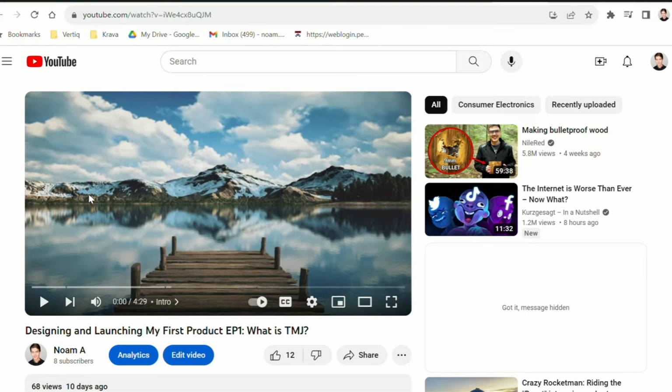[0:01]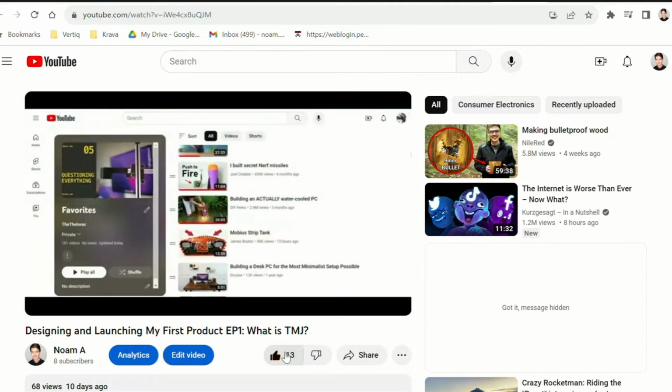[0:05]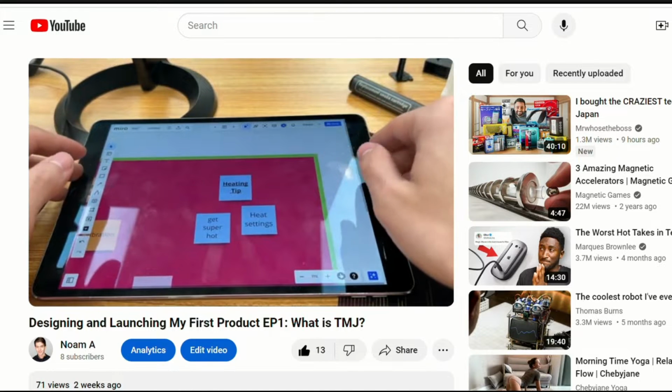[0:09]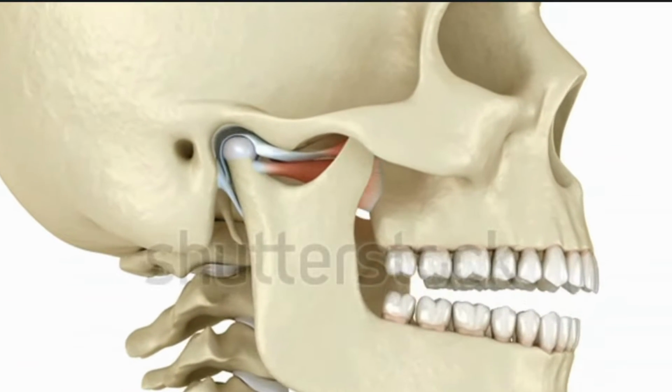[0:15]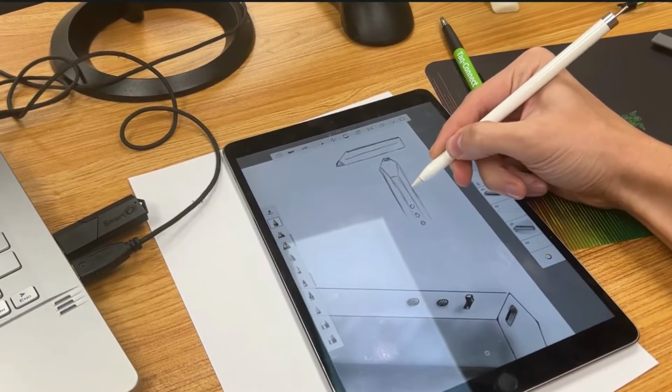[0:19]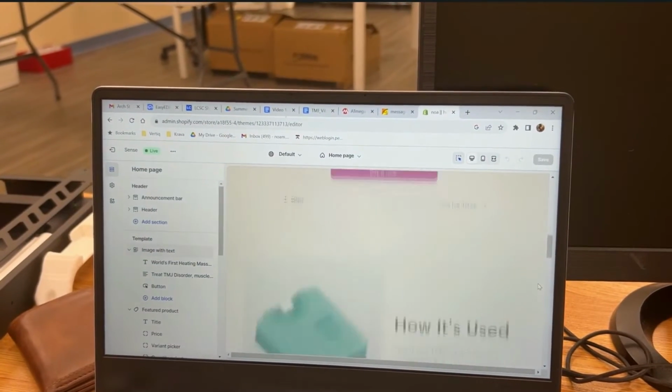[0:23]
Hey everyone, if you haven't seen episode 1 of the series, I highly recommend it, since we go over why we're doing all this in the first place and lay out our design guidelines. But if you've forgotten, this series is about designing and launching my first product that helps treat TMJ disorder. And I'll take you on my journey from ideas to designs, to prototypes, to production, to branding, and to sales.
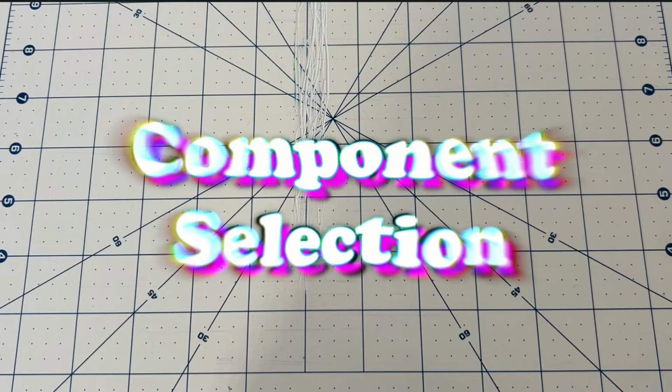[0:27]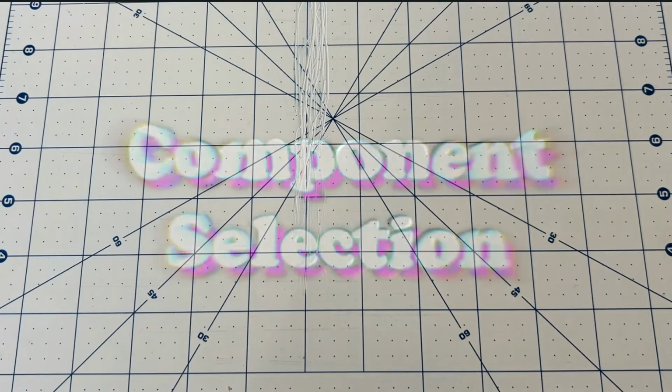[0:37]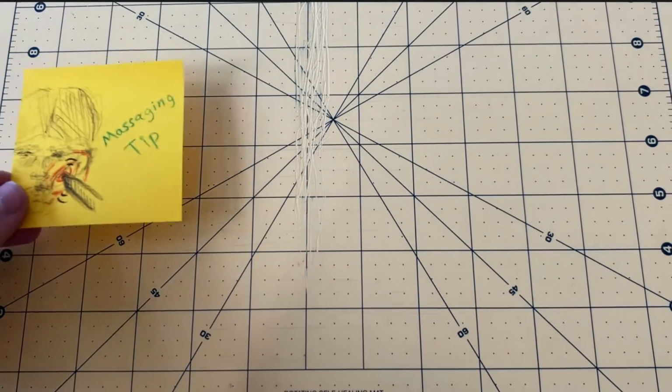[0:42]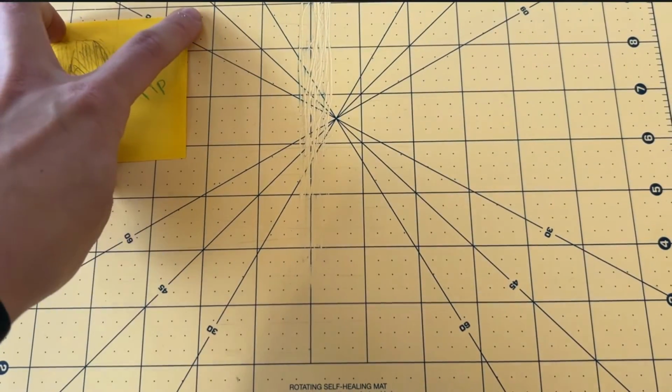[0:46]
For this episode, I want to jump right into component selection. I find this to be the best thing to start with because it'll help us with initial dimensioning and form factor design, as well as figuring out our total current draw, which is crucial for dialing in the electronics. So last episode, we discovered that the best at-home treatment for TMJ disorder is heat and massage. So might as well start with the massaging part.
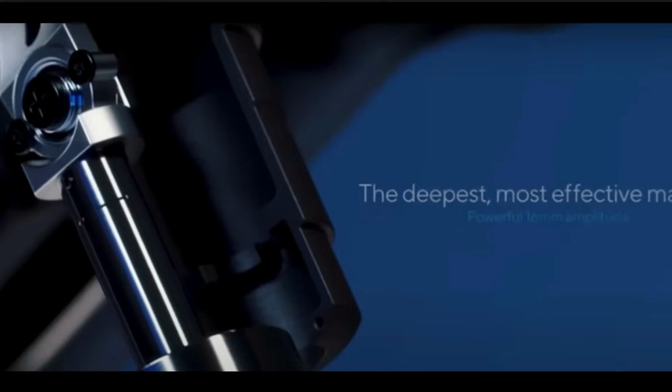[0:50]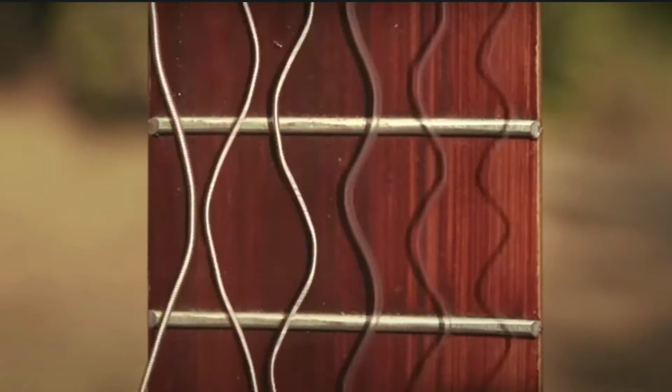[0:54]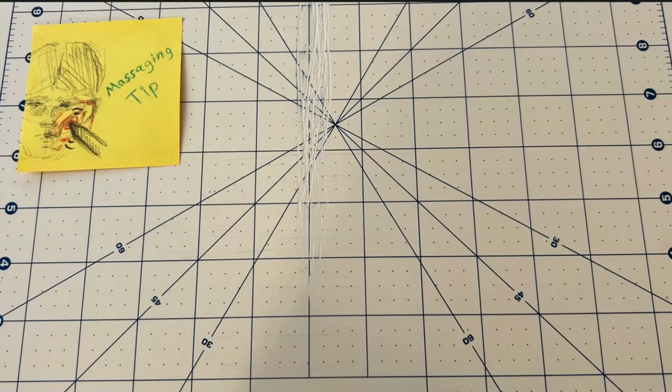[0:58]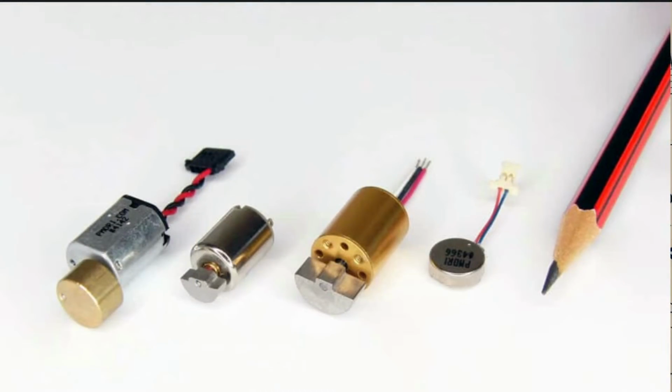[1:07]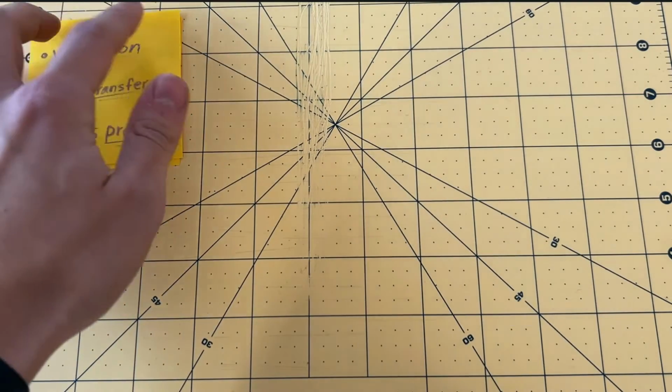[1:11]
A while back, I was considering creating a percussive action, like theraguns, or potentially play around with resonance and give the tip some throw. But as I've stated before, we're trying to make an MVP here. Sometimes it's hard to choose what features to drop, but in this case, I chose to go with a simple vibration motor. At the front of the device, we need a tip that will transfer heat to the jaw, as well as allow for some high-pressure massaging.
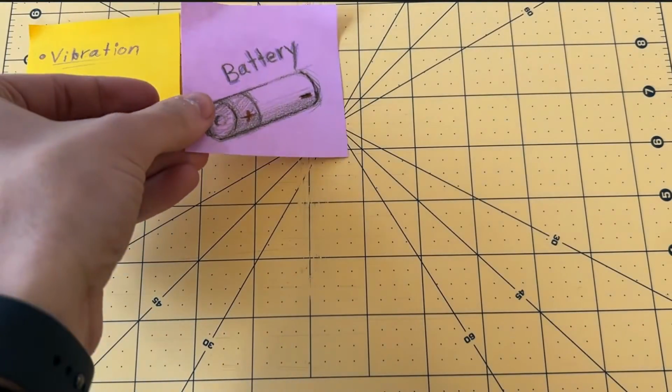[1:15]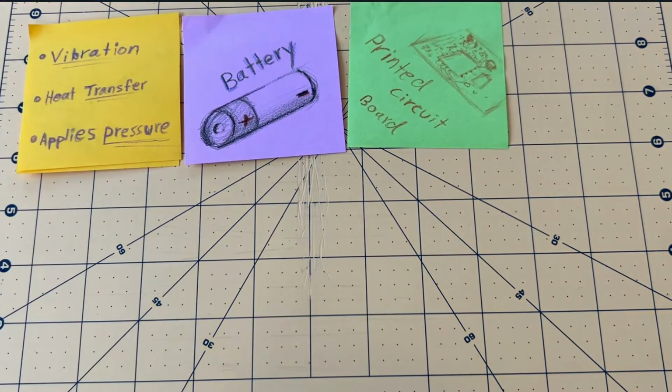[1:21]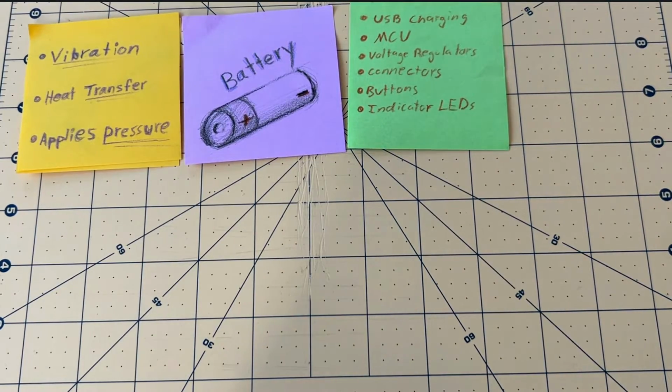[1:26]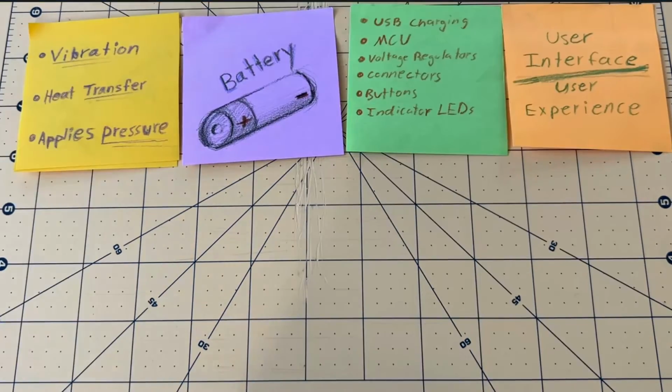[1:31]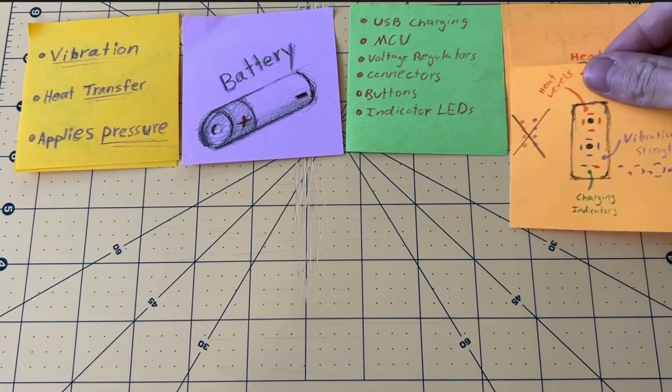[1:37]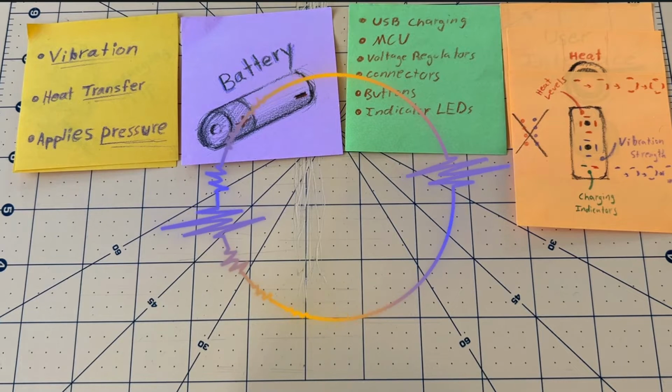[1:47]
We'll also, of course, need a battery, as well as a circuit board that contains all the necessary features, like USB-C charging, a microcontroller, voltage regulators, connectors, buttons, and indicator LEDs. For the user interface, I settled on the simplest solution, to have two buttons, each cycling through heat and vibration power respectively. The indicator LEDs will be for displaying those power levels, along with some battery charging states. I'm thinking that we can wrap these LEDs around the buttons and kind of make a power level ring instead of having them all lined up, which will save a ton of space.
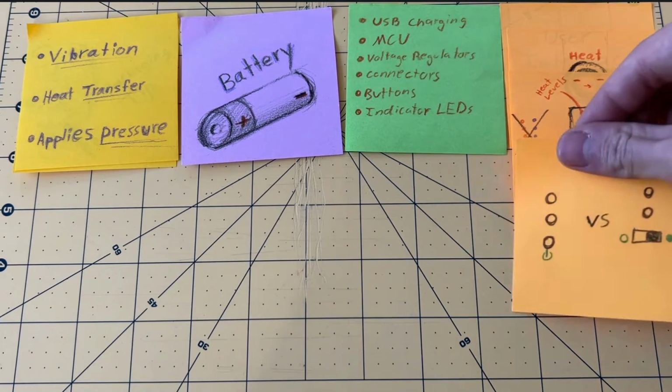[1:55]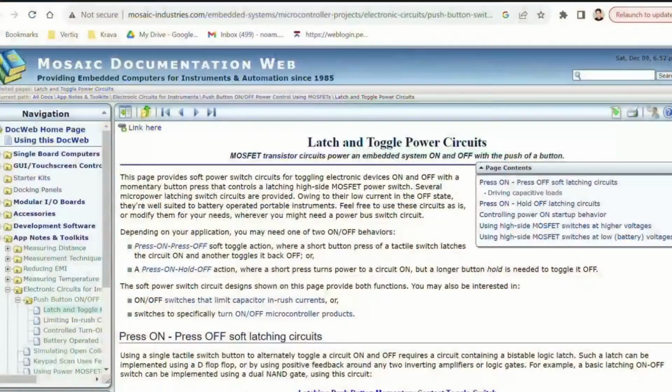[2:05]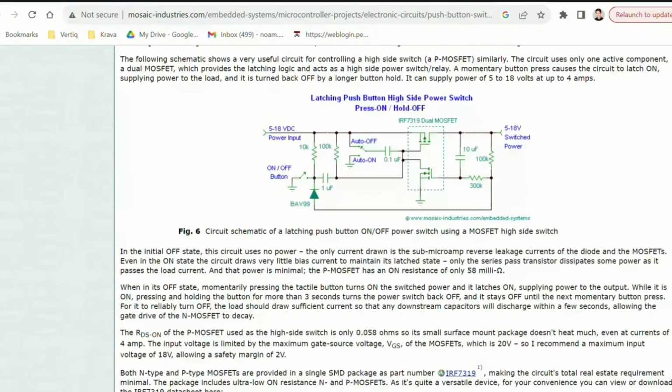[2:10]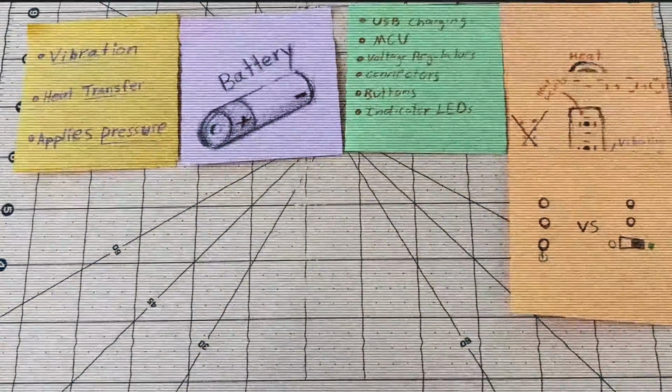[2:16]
For turning it on and off, I'm struggling to pick between a button and a switch. A button would obviously feel and look so much better, but adding the extra circuitry to make it a soft latch and worrying about drainage and accidental triggers is definitely adding some complexity compared to the simple switch. I think this is another improvement that we'll have to leave for the V2.
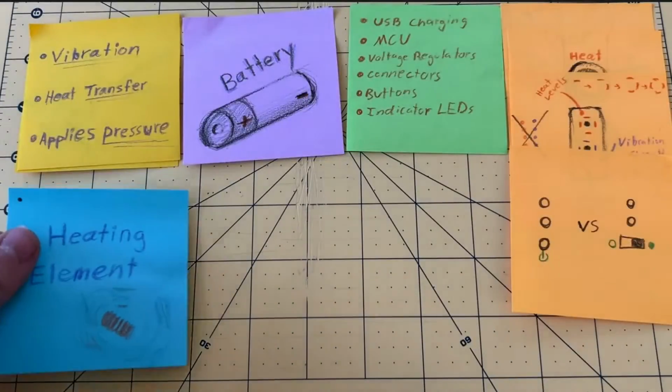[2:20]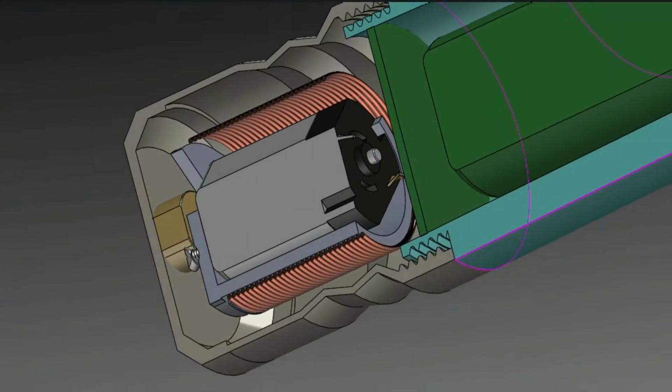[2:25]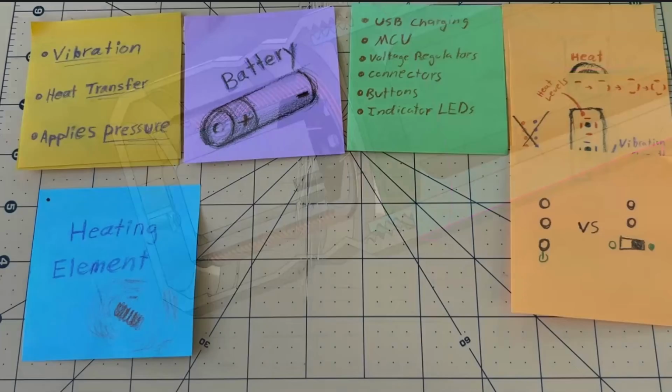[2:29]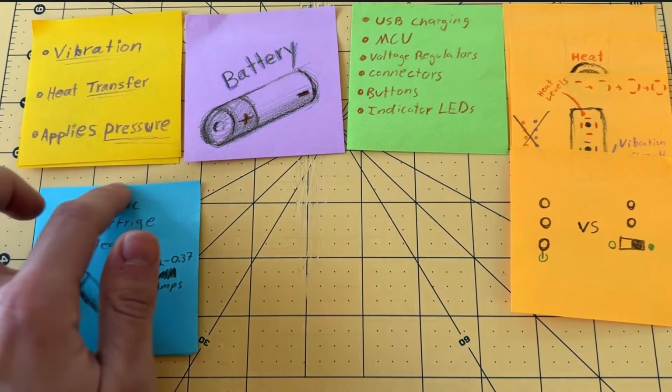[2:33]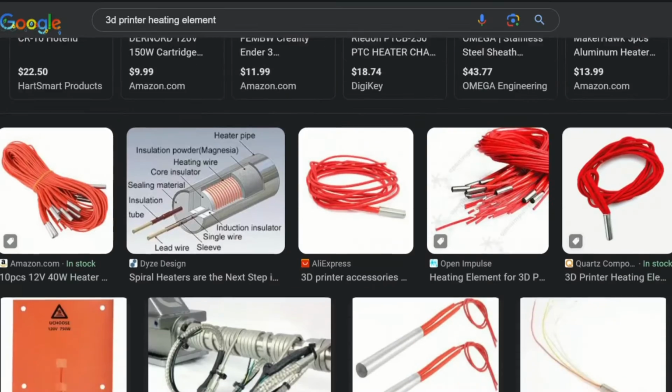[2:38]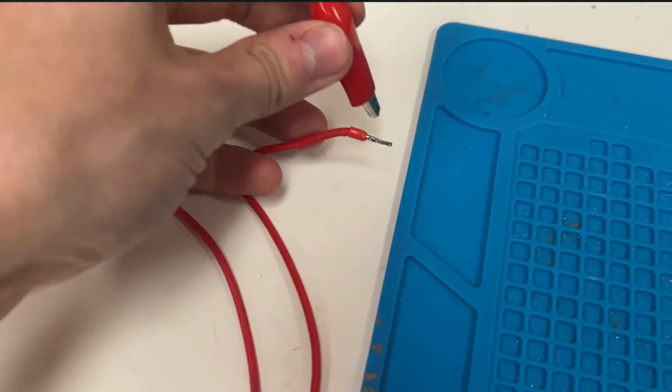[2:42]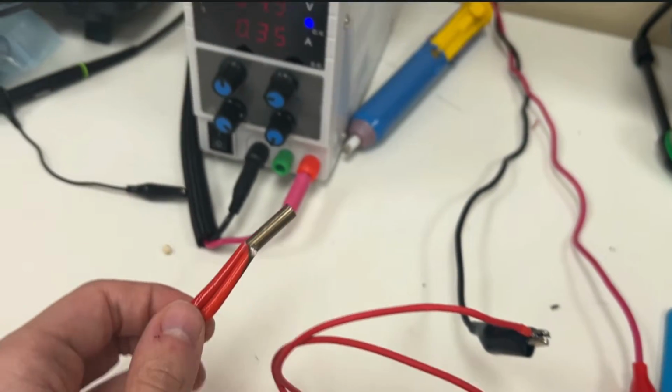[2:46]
Now, onto the heating element. My first thought was to look at a copper coil that can fit around or inside the massaging tip, since I couldn't imagine squeezing a pad into a tip. But then I remembered that 3D printers use these tiny ceramic cartridge heaters, which are the perfect size and shape I'm looking for. So I took apart an old extrusion head and wired it up to test. Looks like it gets plenty hot at fairly low voltages and only draws around 350 milliamps.
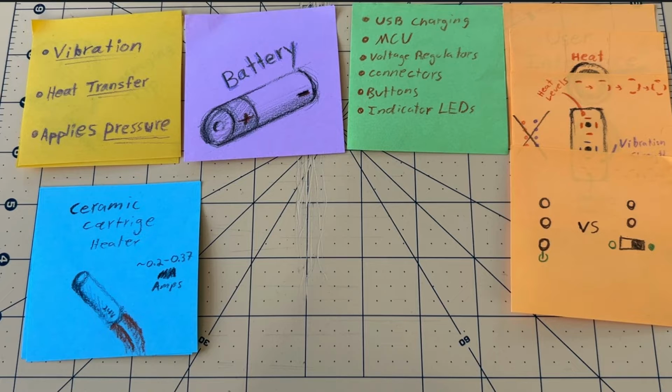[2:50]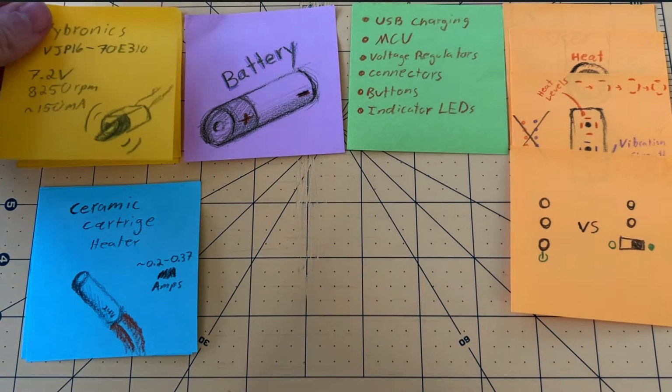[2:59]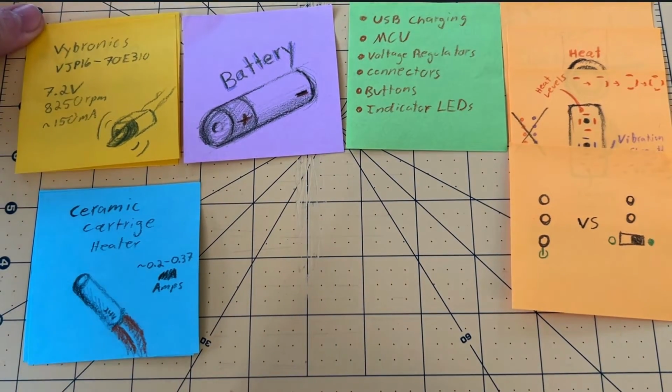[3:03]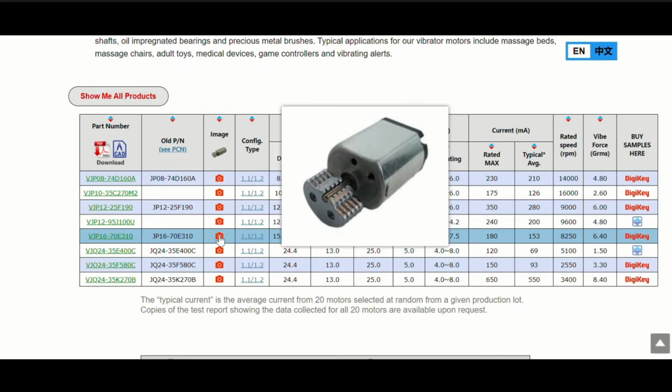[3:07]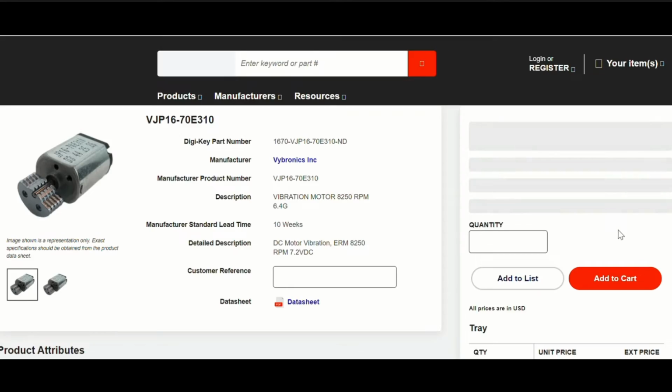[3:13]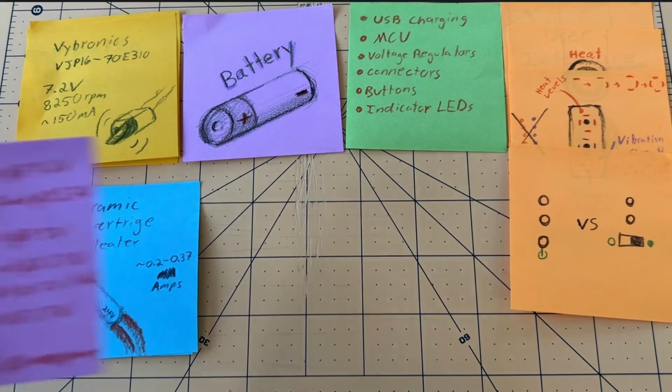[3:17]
Obviously, we won't know how much heat we'll actually need till we design the tip because of heat transfer, but I think this will work. The specific vibration motor I found on DigiKey, and I picked it because it had the most vibration force and can run at the highest voltage. It's better to do something overpowered that fits and then scale down later if it's too powerful, than go the other way around. It also says it draws around 150 milliamps, so now we can pick out the battery.
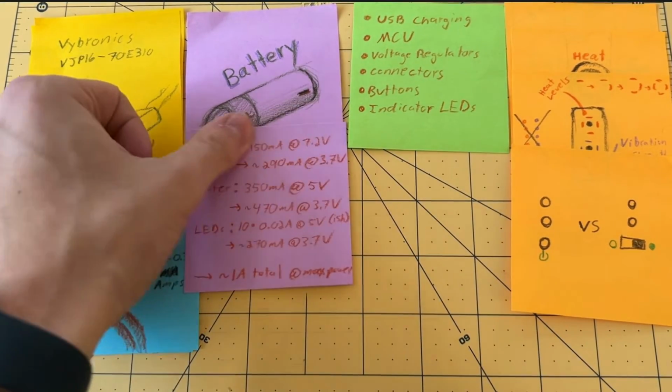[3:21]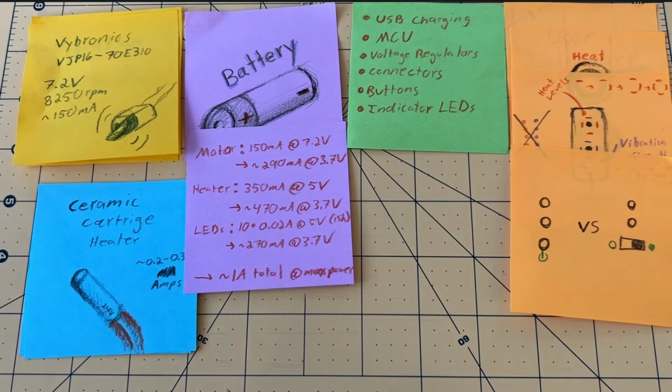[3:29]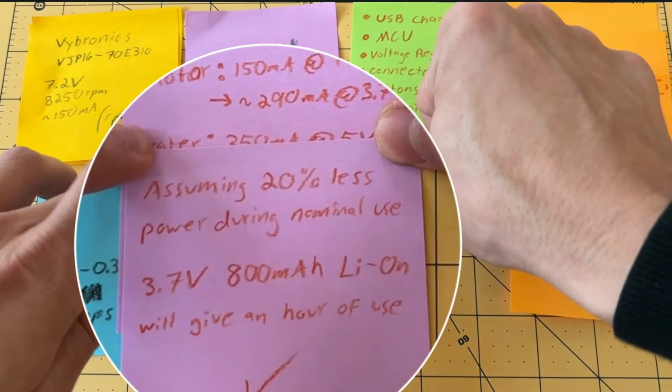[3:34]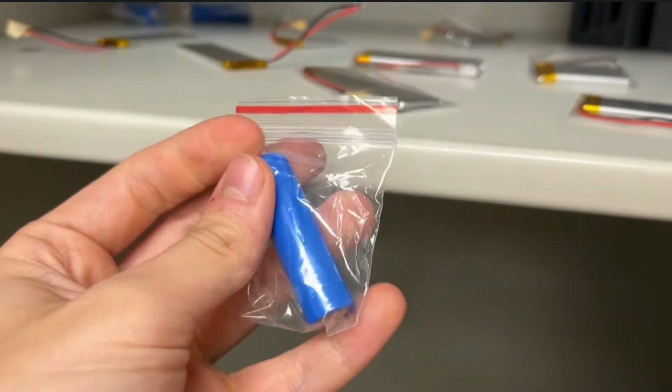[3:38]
Looks like when we take into account the boosting from 3.7 volts to operating voltage, we end up having a maximum current draw of around an amp. So assuming the user on average uses 20% less power than the maximum, we can use these 800 milliamp hour 14500 lithium ion cells that are the perfect size and get us an hour of runtime.
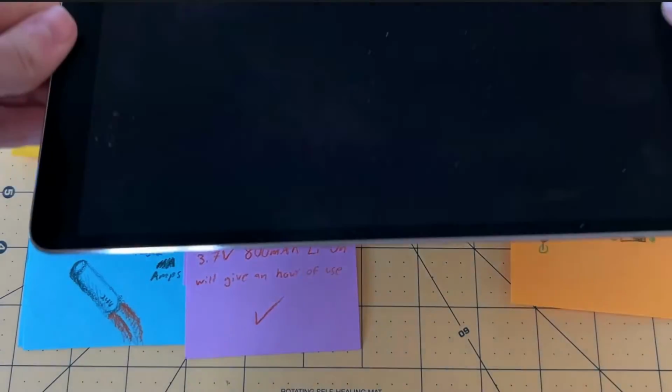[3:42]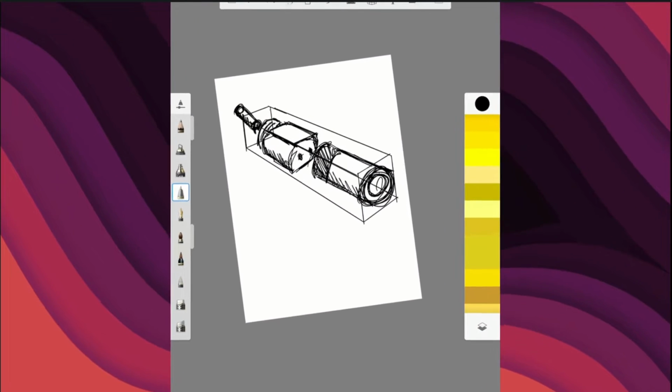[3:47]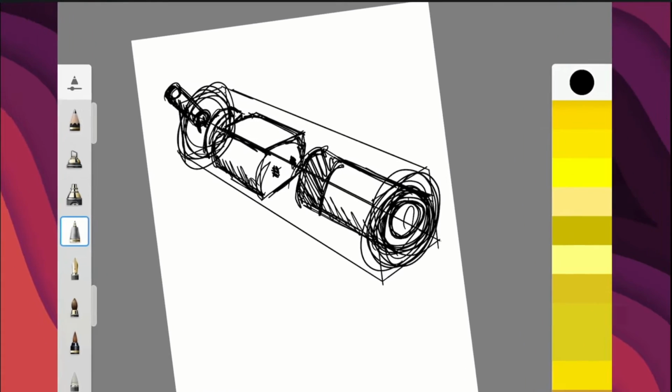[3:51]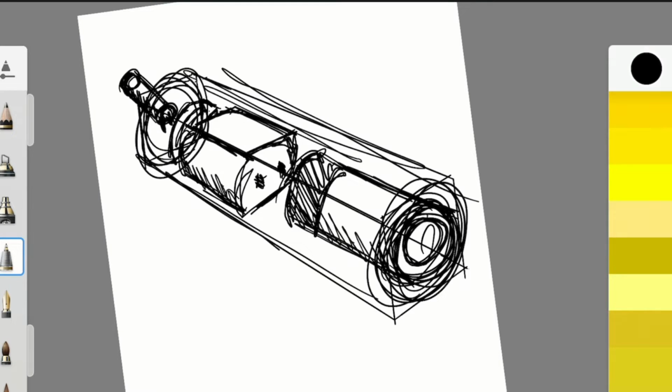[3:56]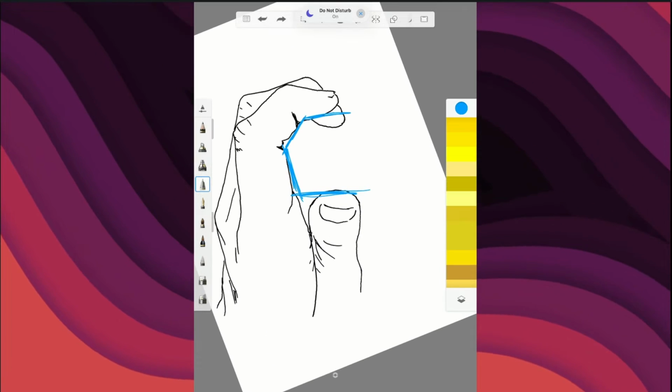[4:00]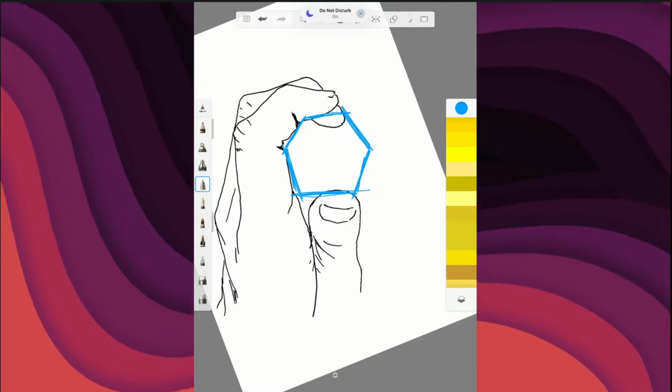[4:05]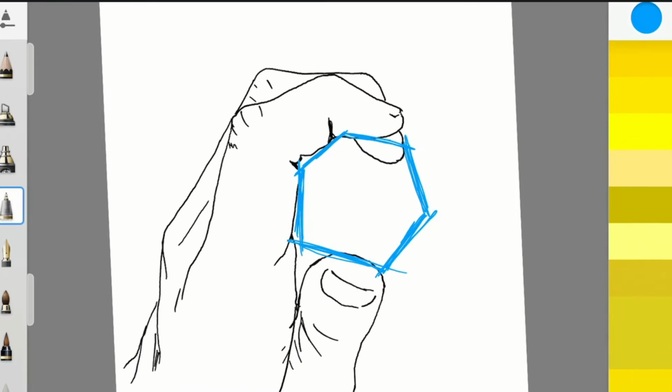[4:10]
With everything picked out, let's figure out what we want this thing to actually look like. It's definitely going to be some sort of high aspect ratio tube thing, since all of our internal components are pretty cylindrical. We're trying to avoid any phallic imagery here, so the farther away from an organic form the better. So between that and making sure the device comes out of 3D printers well, I'm really leaning towards some sort of hexagonal tube. As you can see, I'm imagining a finger grip like this, and a hexagonal profile fits really nicely within it. And on a 3D printer, it won't need any support material.
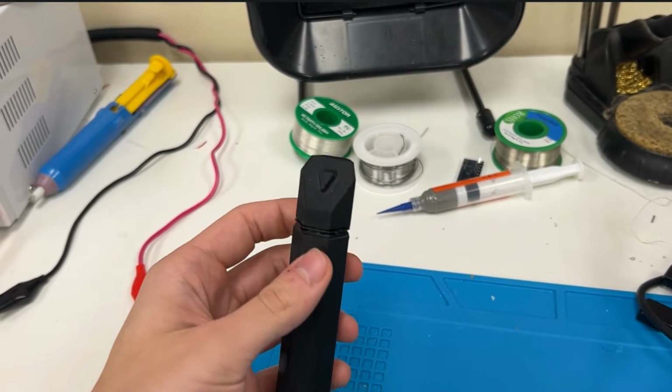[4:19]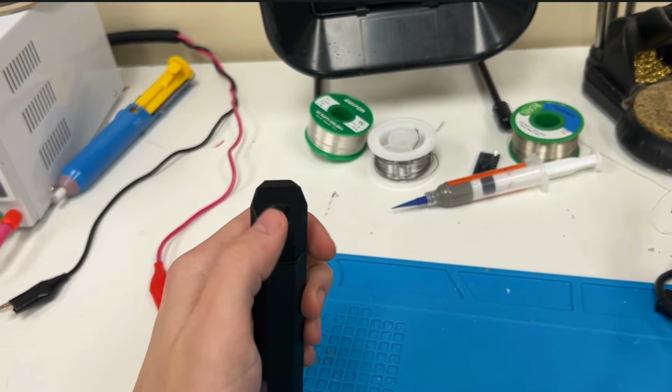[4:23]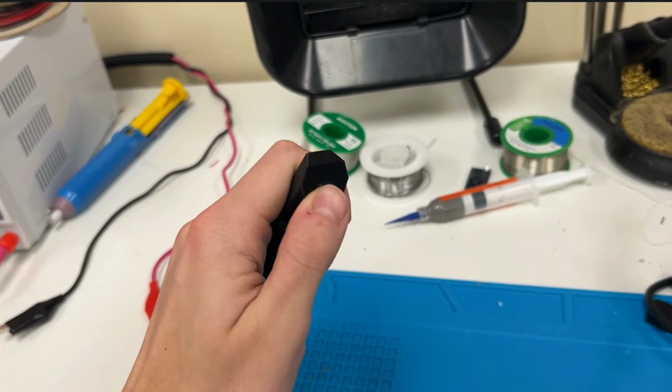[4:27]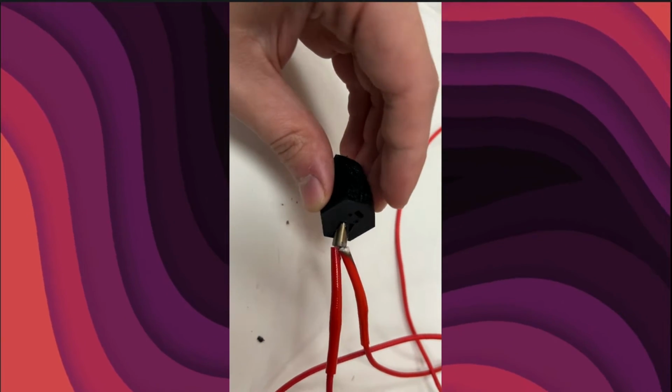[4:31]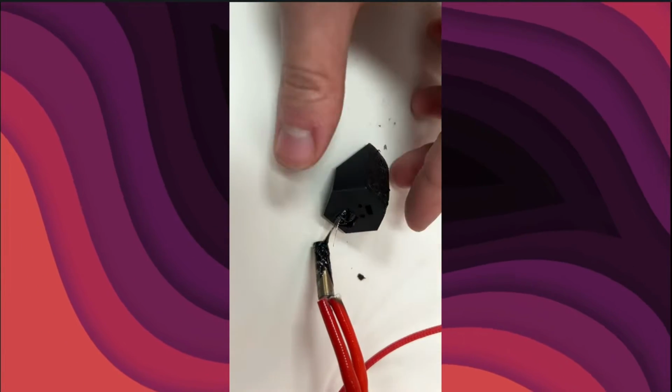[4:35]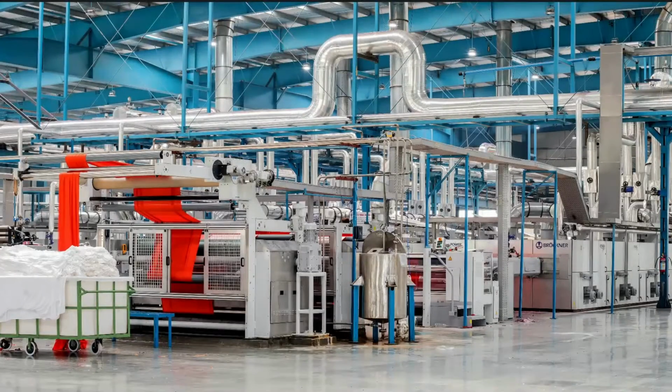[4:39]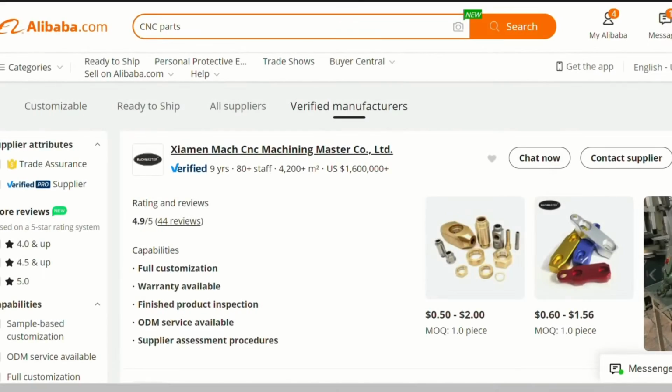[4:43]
This was one of the first look-like prototypes I printed out. My idea for the tip was to have a large surface area for heat transfer, while having a nub that presses deeper into the skin for some added pressure. I of course tried to see if there was any chance for plastic to be a viable mode for heat transfer, but just ended up with some melted plastic instead. It's probably doable if we were injection molding, but I don't have the money for that right now, which is why the obvious solution was machining the tip out of aluminum.
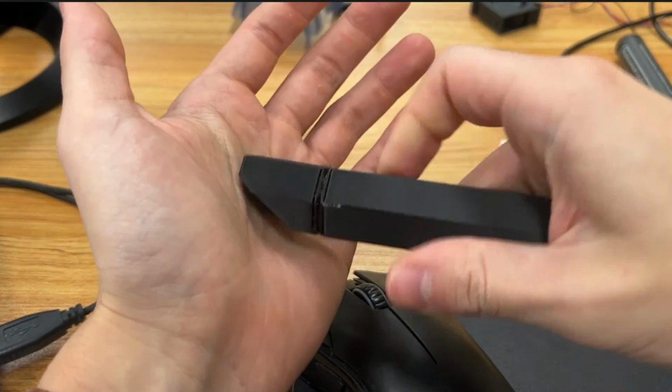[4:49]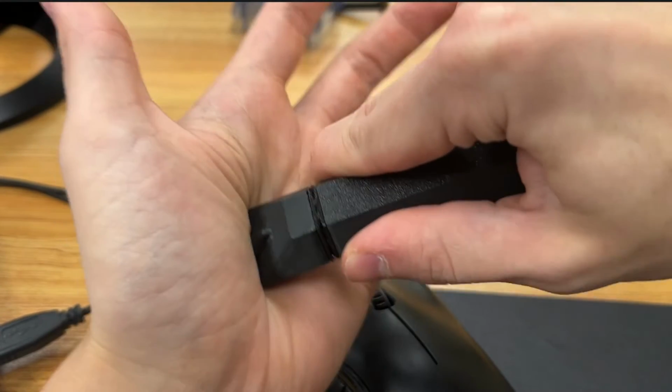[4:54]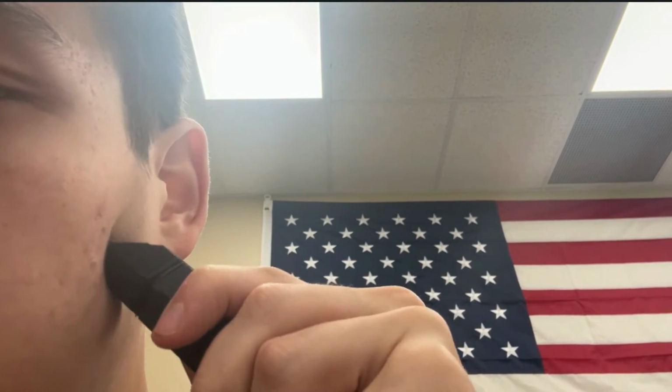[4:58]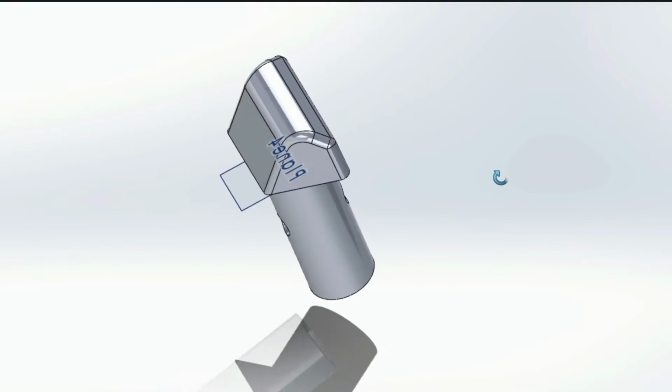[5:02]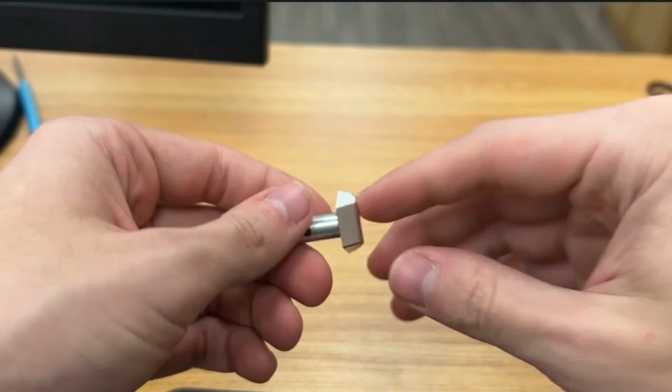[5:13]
While testing out the initial design, I noticed that I actually really preferred the end of the slant for massaging more than the nub, and I figured if I round out the corners a little and make the switch to aluminum, there will still be enough area to deliver heat. I did a quick little redesign and played around with how it felt on my jaw until I got something worth sending out to the manufacturer. Fast forward a bit, and boom, here it is.
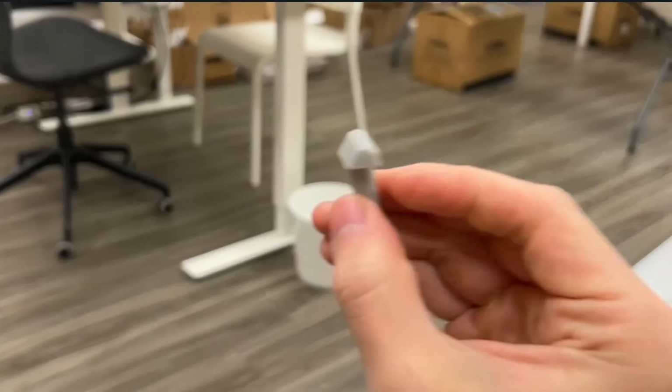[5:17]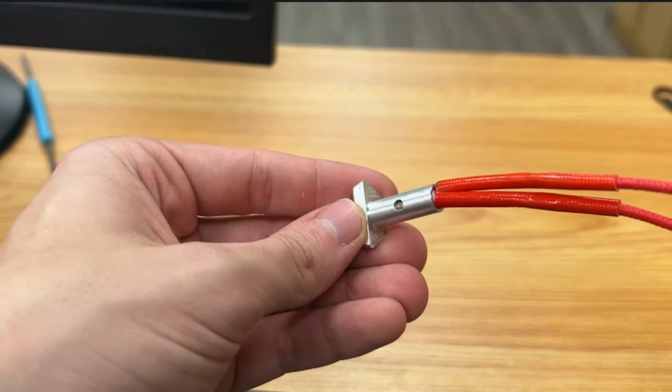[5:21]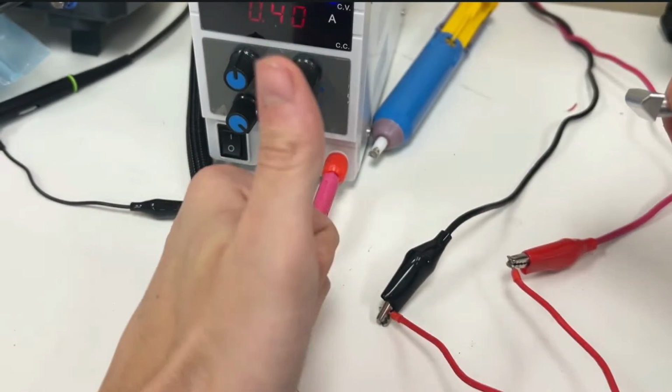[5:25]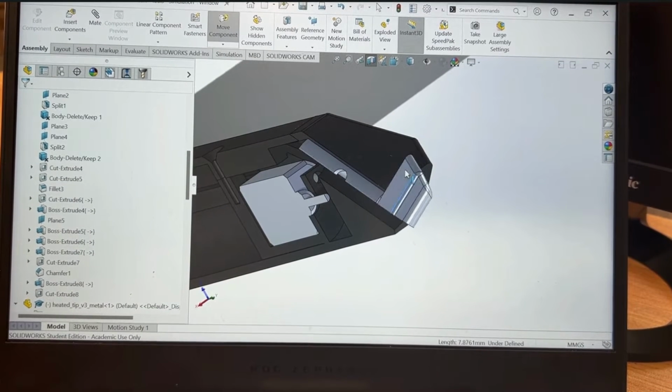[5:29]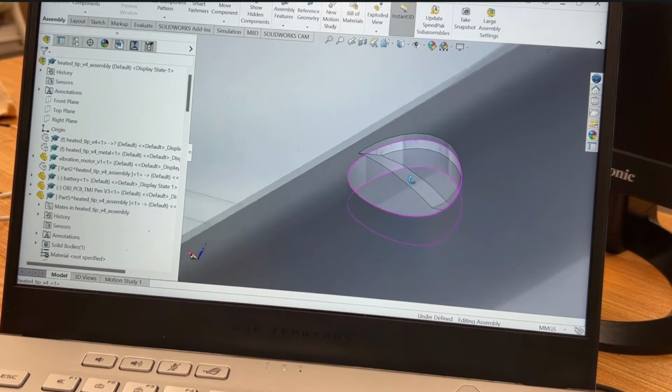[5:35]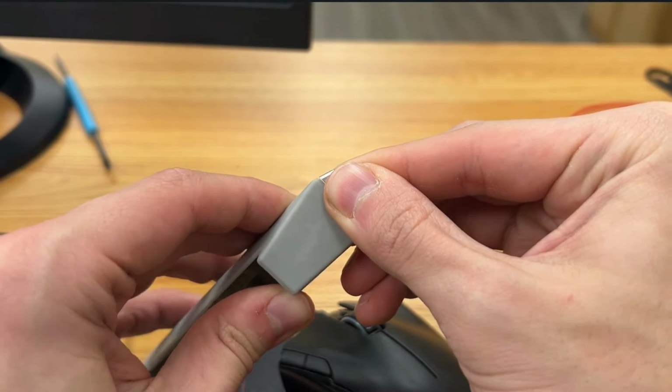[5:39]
As always, pretty much as soon as I sent the part out, I found ways to redesign it. But it's still nice to be able to verify the heat transfer is good around 5 volts and get some first uses in. But yeah, I really didn't think through how I would keep the tip constrained. I intended to use a screw to constrain it, but quickly realized that was overkill. I then designed a snap fit feature for the holes instead, but couldn't get rid of the play.
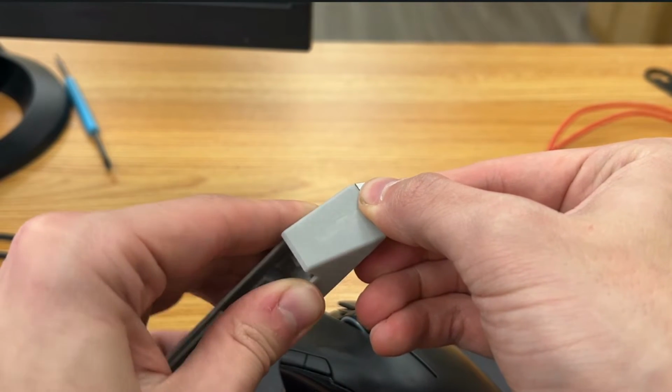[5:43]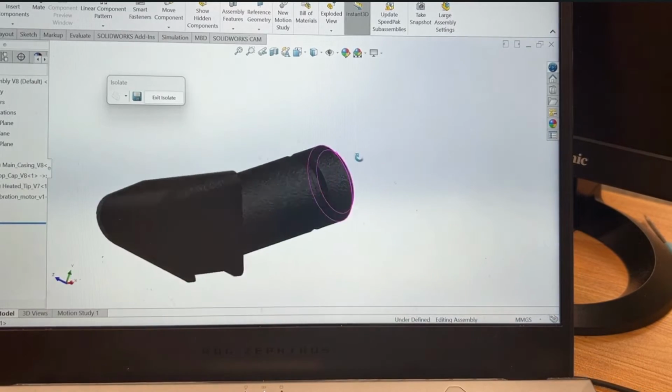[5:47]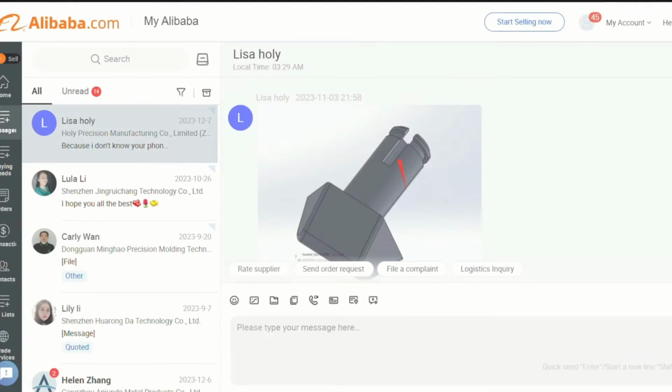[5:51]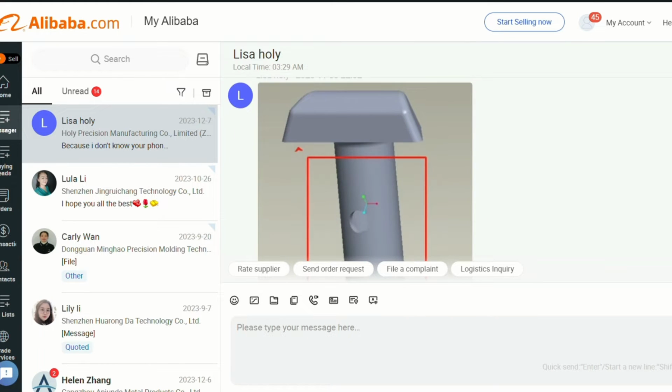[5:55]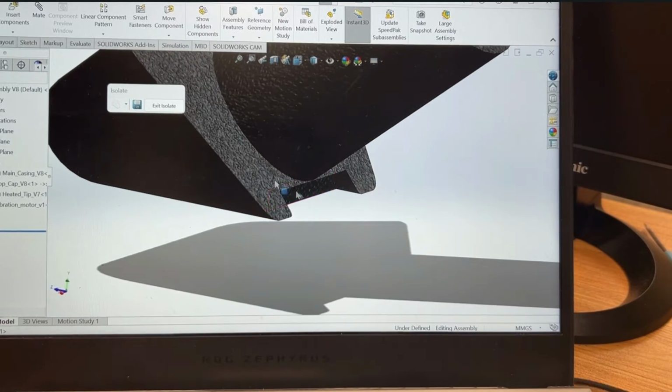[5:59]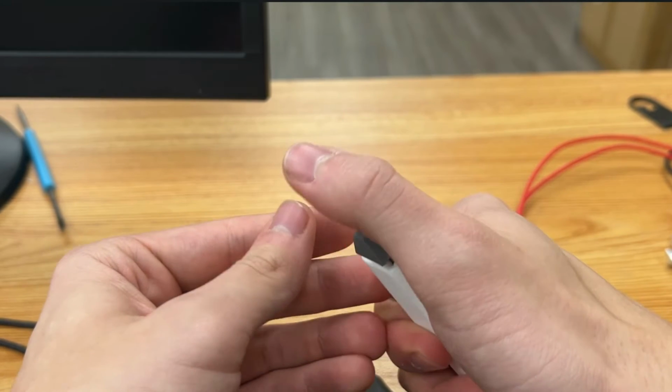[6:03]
And after talking to the manufacturer, I realized they turned the tube end, so I added a groove and chamfer to make the snap fit way nicer. To prevent rotation, I wanted to add some kind of key feature, but it ended up costing way too much. Instead, I made the cutout on the head of the tip, which got my quote down 50 to 70 cents per unit. It worked perfectly 3D printed, so I sent out another sample request, and it should arrive when we're farther along with this project.
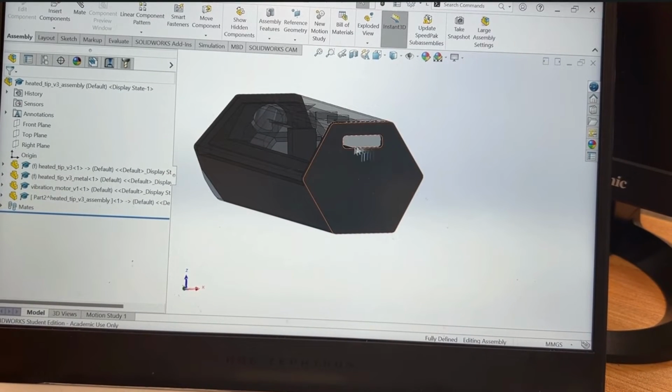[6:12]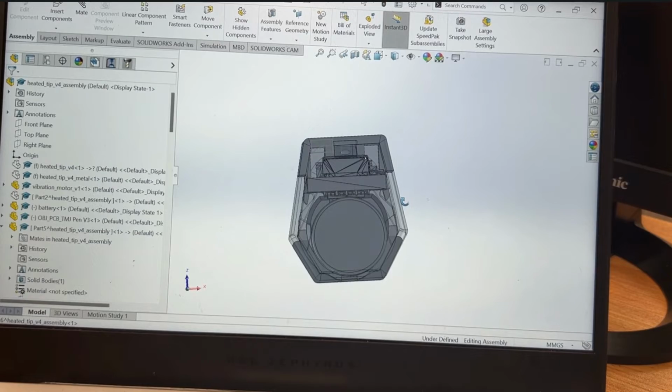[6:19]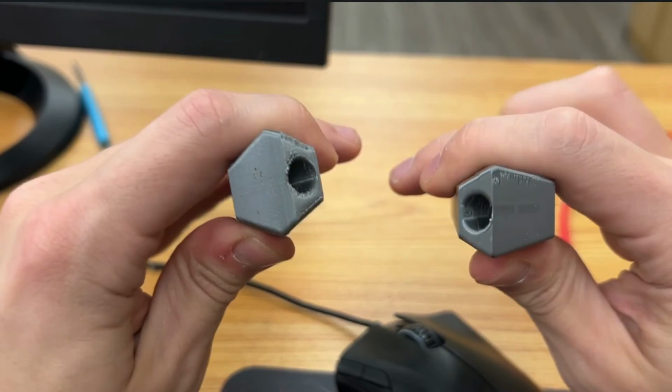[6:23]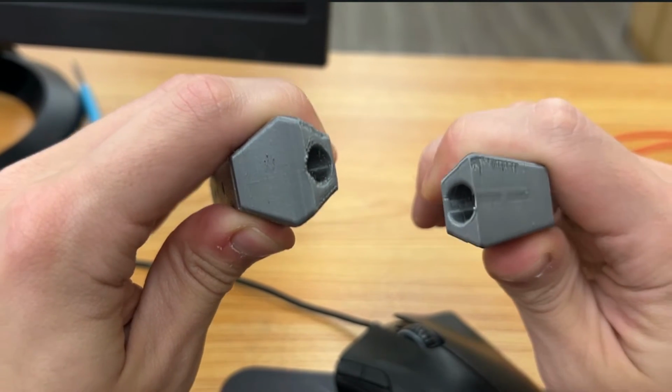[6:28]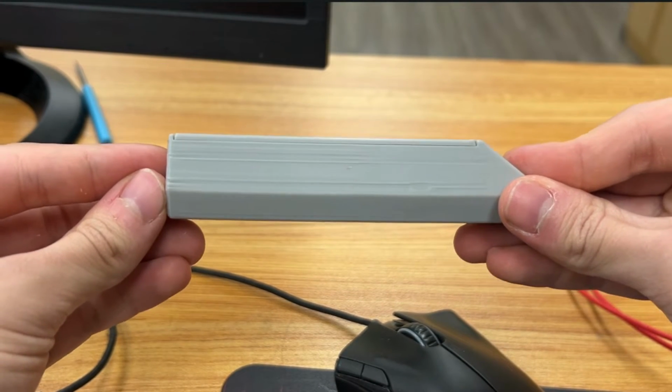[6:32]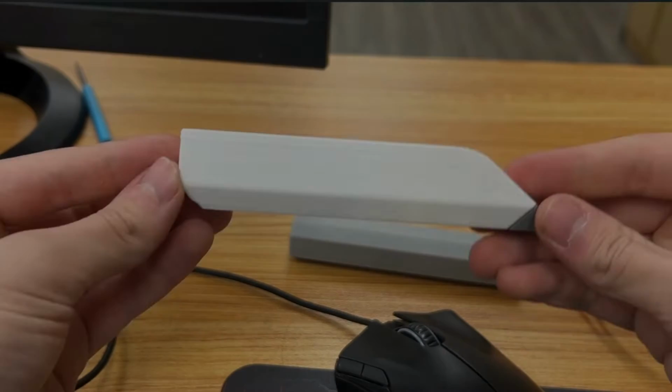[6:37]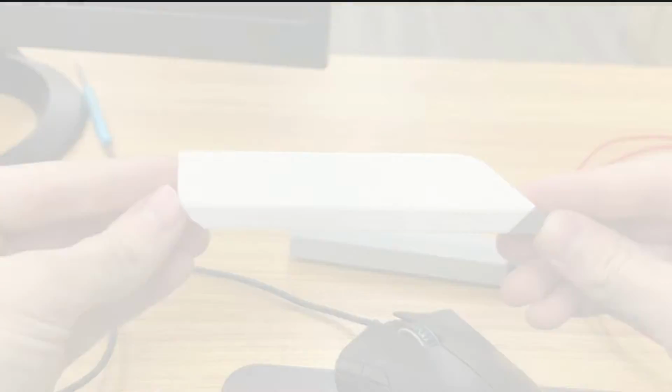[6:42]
Back to the casing. I realized I was going to need a little more height for the battery and PCB. So instead of a normal hexagon, I'm going to squish its sides in and make it taller. This fits even more nicely in your hand because there's a lot more space for the thumb to sit on, and there's a bit less pressure in the grip. I later noticed what I had just looked too rectangular from the side. I really like this leaf shape I've seen around, so I decided to add those diagonal fillets to slim out the side profile.
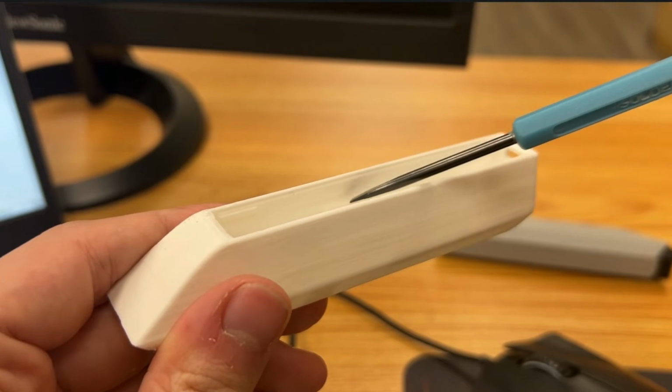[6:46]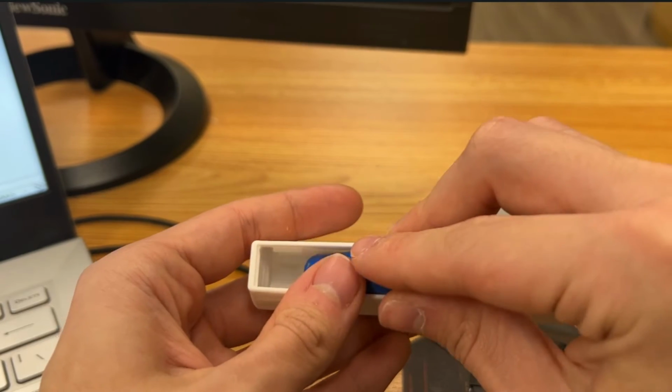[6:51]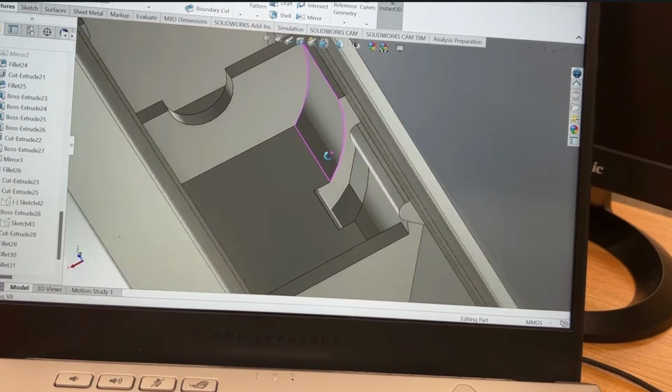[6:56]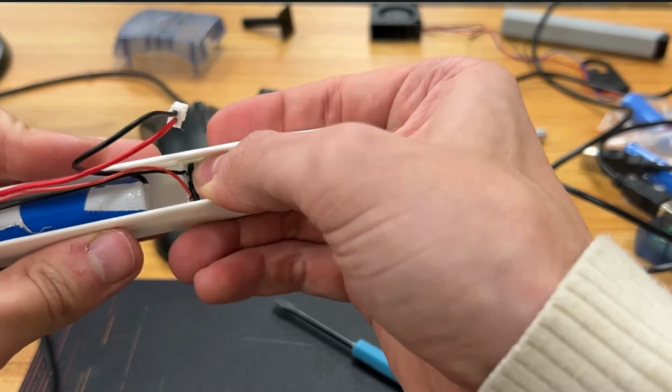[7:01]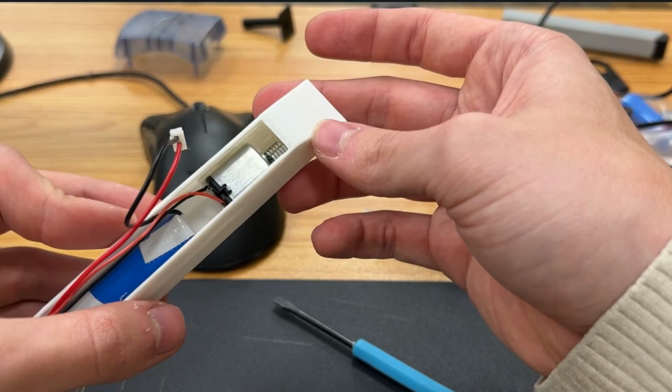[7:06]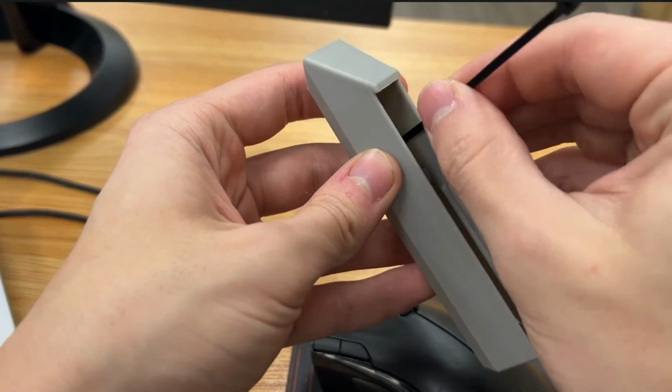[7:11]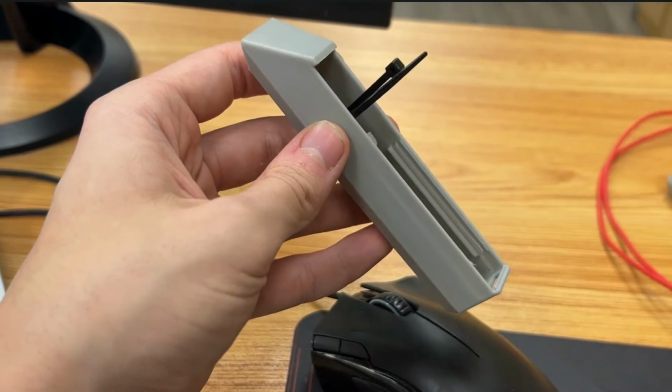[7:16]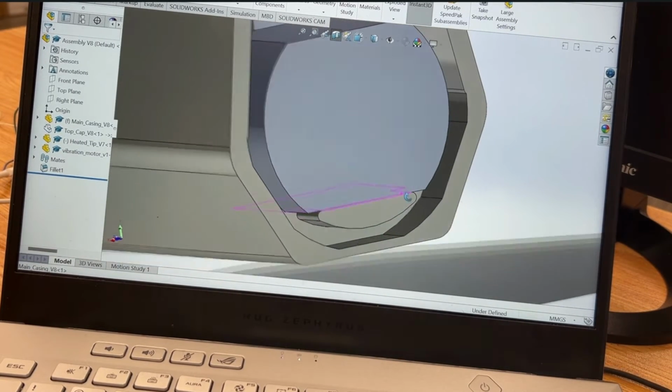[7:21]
On the inside, we've got a few things we need to do. I added these extrusions to act like snap-fit receptacles for the battery and PCB. So the battery just snaps in there, and the PCB goes right on top. Then we have the motor locator, which you can snap the motor into. But tightening it down is super important because we don't want any rattling or loud vibrations. I want to minimize part count, so I decided to be super cheeky here and use a zip tie to hold the motor in tight. I like it because it requires no extra printed components, won't loosen from vibrations, and really makes use of 3D printing with that embedded channel.
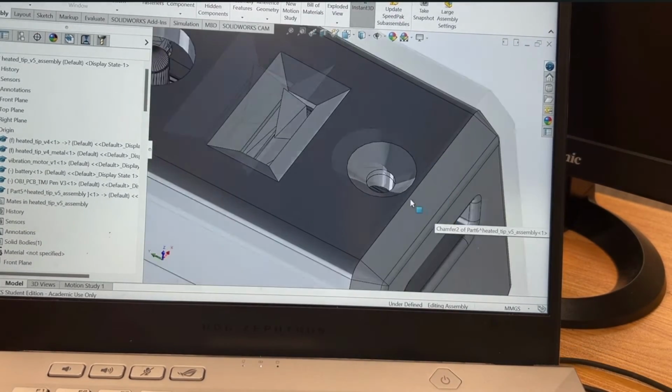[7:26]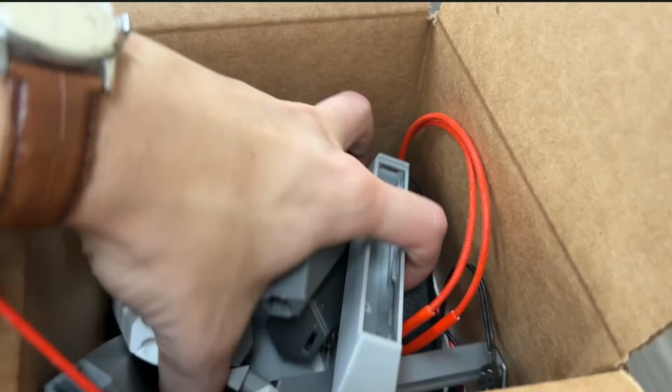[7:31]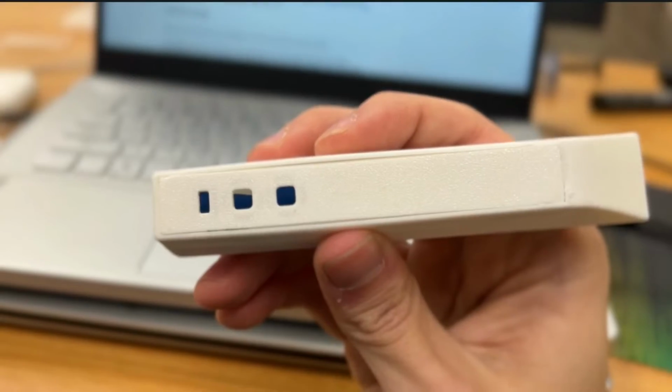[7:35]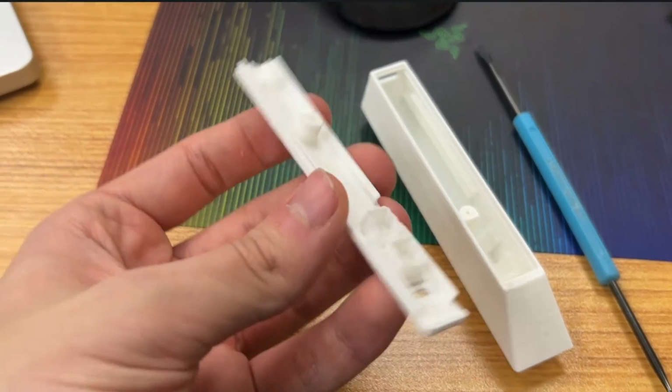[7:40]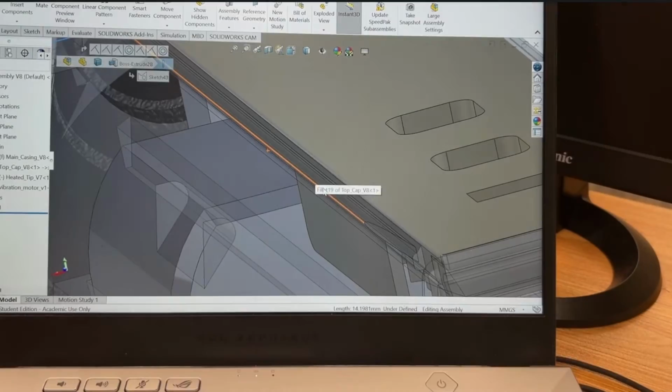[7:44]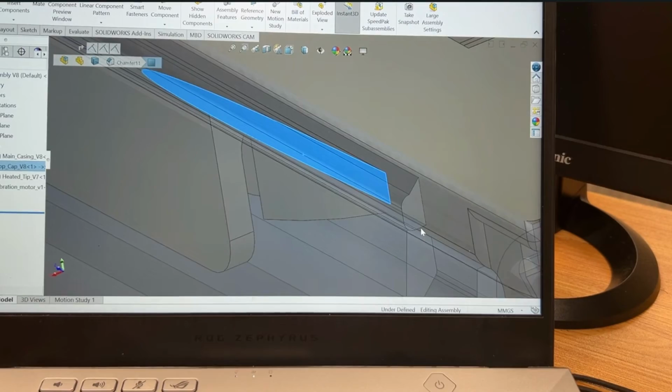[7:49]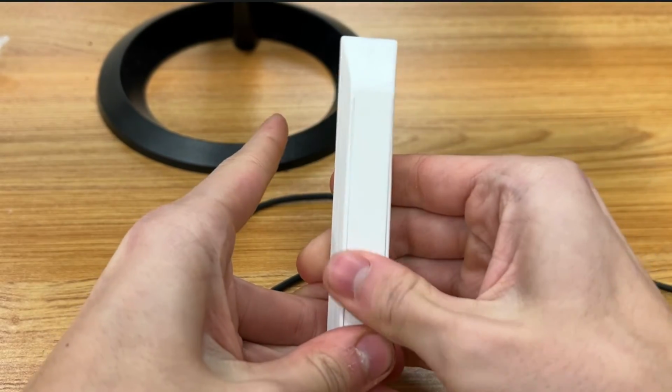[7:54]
In the same mindset of reducing parts, I've been slowly getting rid of screws in these casing designs. Now I'm even playing around with using no screws. Every design I tried though ended up having some sort of play or gap, which feels cheap. But I really like the idea of having no screws showing, so I'm just going to keep iterating on different snap fit and retaining features. Right now, the one that's working best is having extrusions on the side that snap it to its inverse in the casing. They've got a taper on the end that guides the cap between the casing walls.
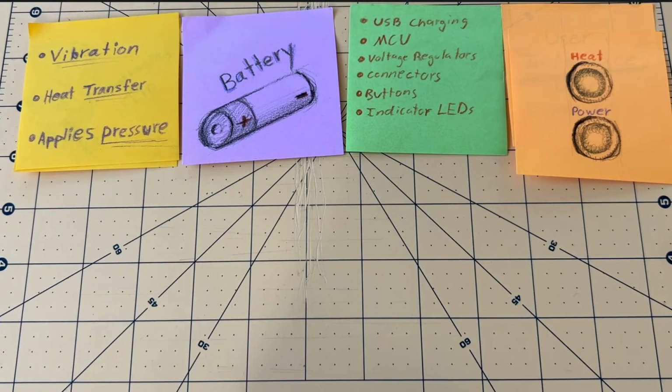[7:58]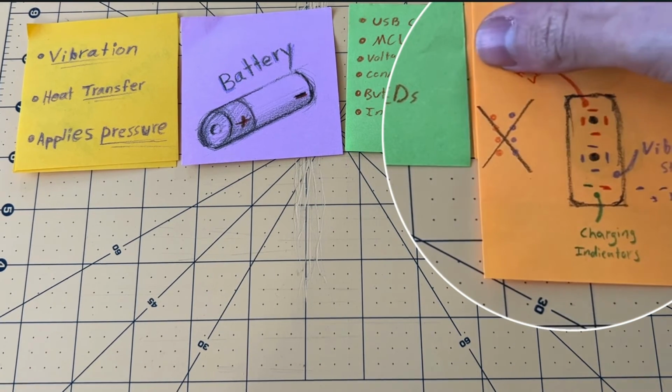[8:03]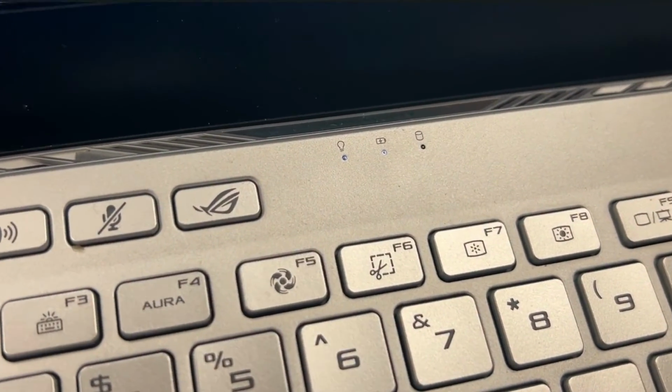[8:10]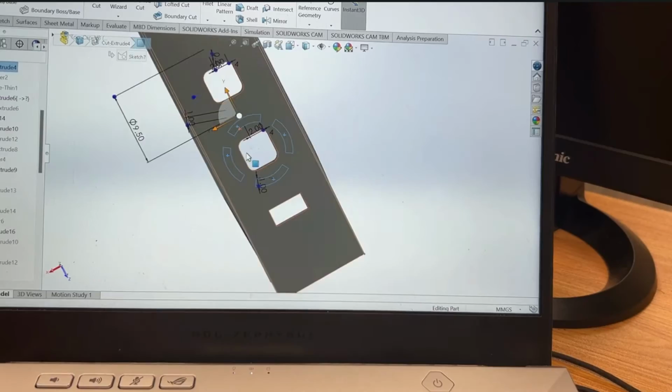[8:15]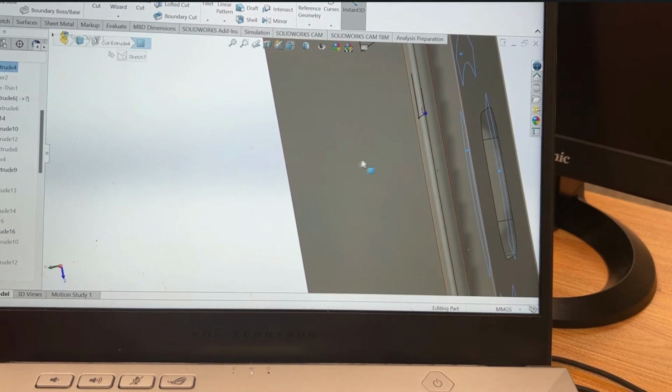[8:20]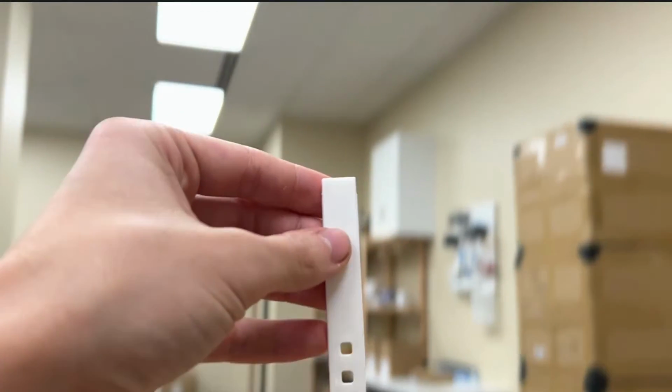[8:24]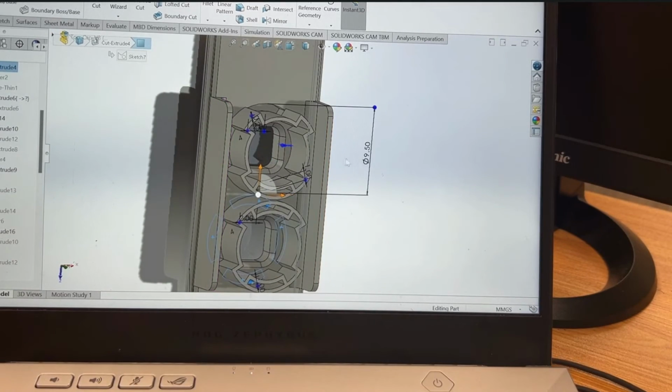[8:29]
The cover has a few other features worth noting. As I mentioned, I wanted to have the LEDs make a sort of ring around the buttons. I wasn't exactly sure what the neatest way to display them was, though. I didn't want to have any holes, nor did I want to use a sticker or insert any light pipes or different materials into the print. But I realized that if I use a light-colored filament and made the layer height over the LEDs super thin, I could have the indicators be totally invisible on the surface, that is, until you turn on the light. And then I added blinder walls around the LEDs so they don't interfere with each other.
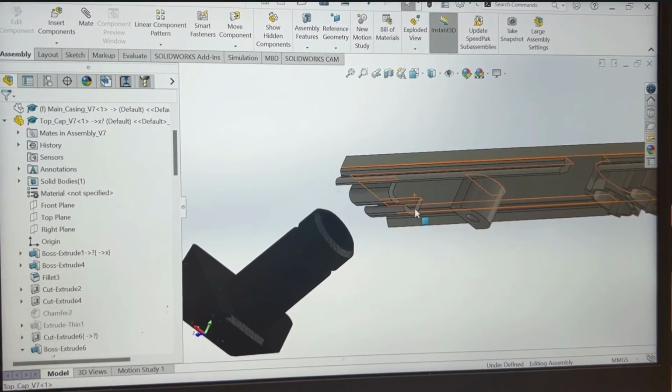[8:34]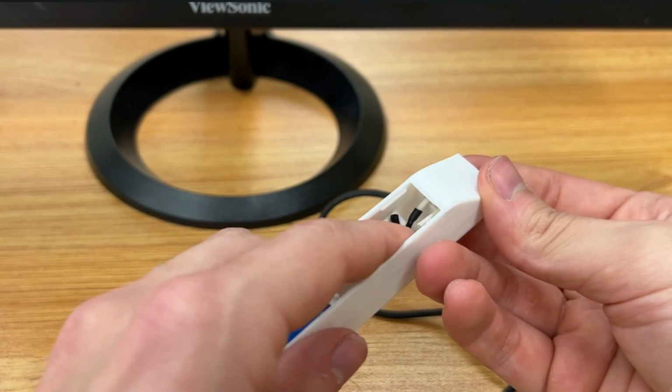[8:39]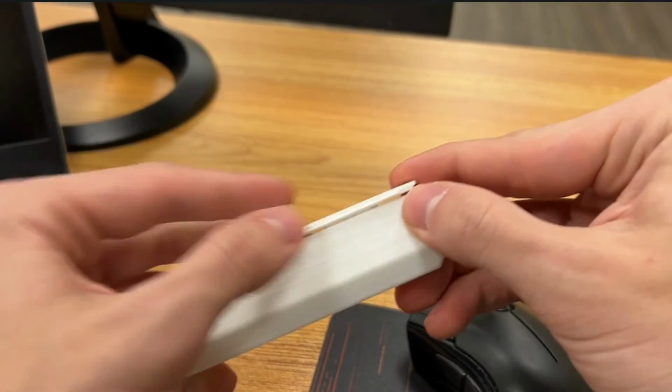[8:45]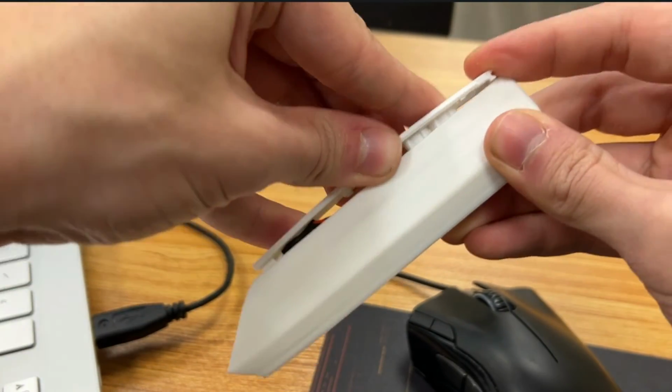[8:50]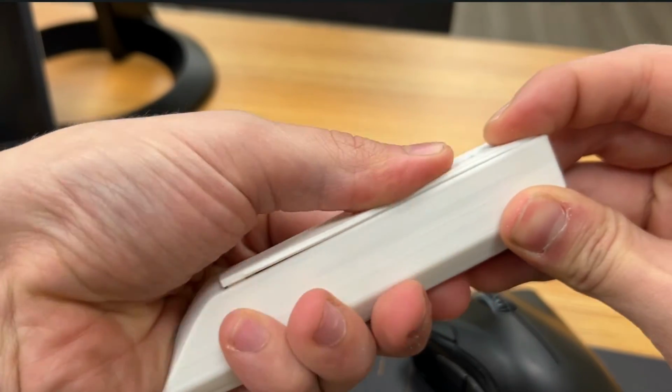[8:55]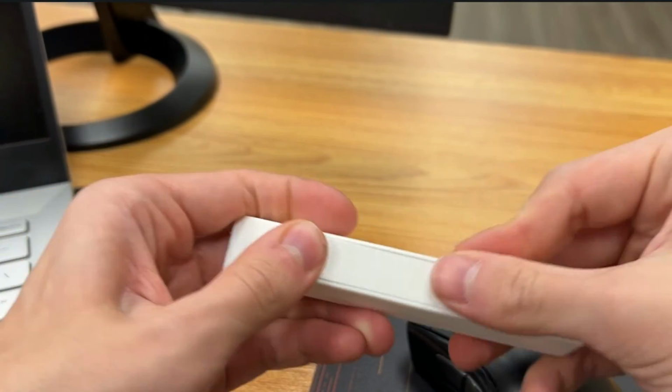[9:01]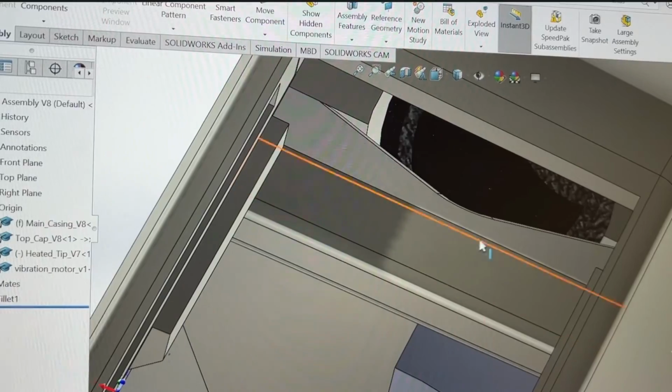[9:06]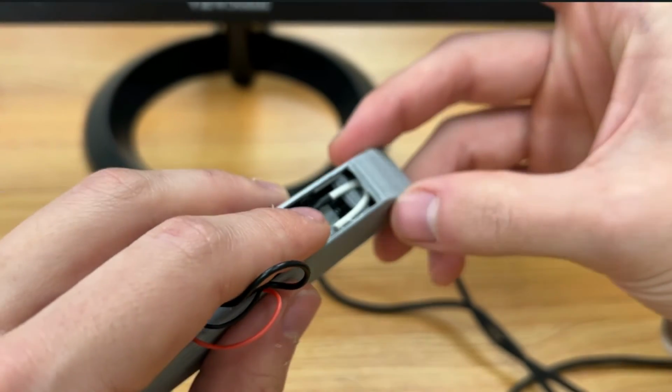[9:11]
The other feature I've been playing around with is this guide for the heating element wires, because they pass right over the motor and I don't want them drooping down and getting caught. But currently, I'm having some trouble consolidating this with the fact that I plan on pressing the cap in on the other side, meaning the wire is going to have to be longer than it needs to be so it can be pre-routed through the guide, which makes the assembly annoying and wastes precious space. And the design for assembly is really important here. With this dense and thin of a part, it's important that every component can be placed with ease. So I think I'm gonna have to try to move the wire guide onto the case instead of the cover.
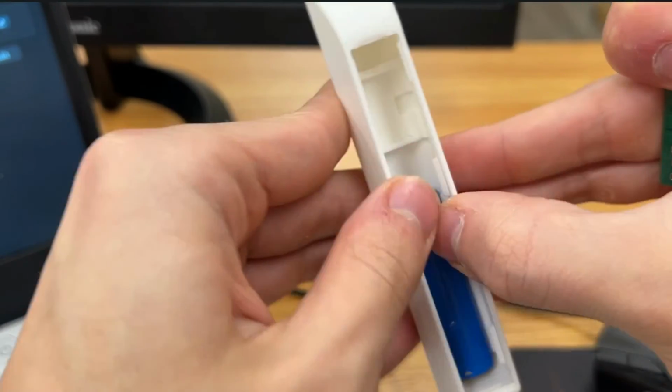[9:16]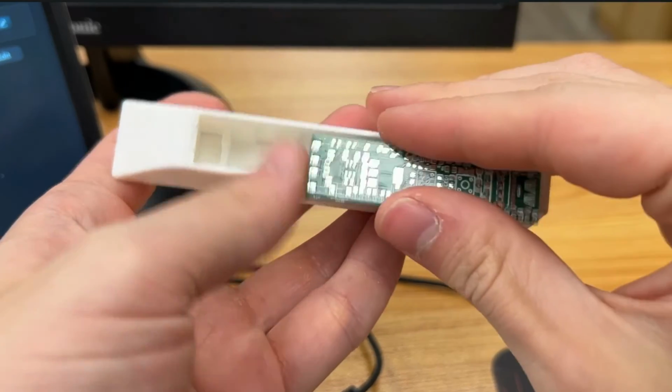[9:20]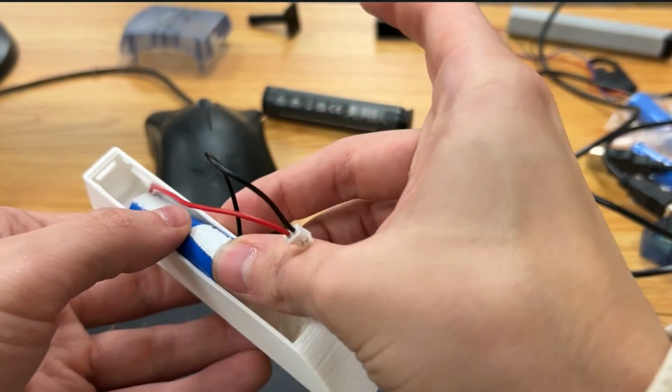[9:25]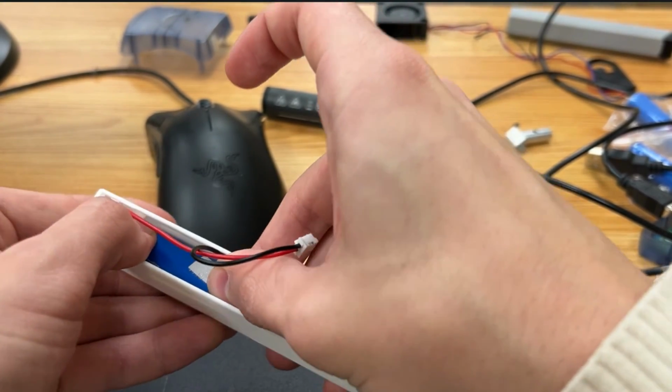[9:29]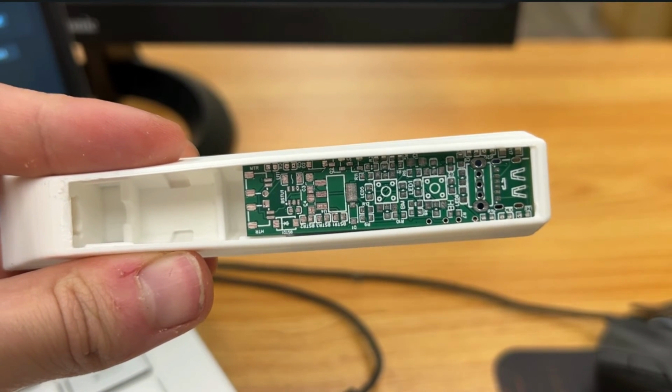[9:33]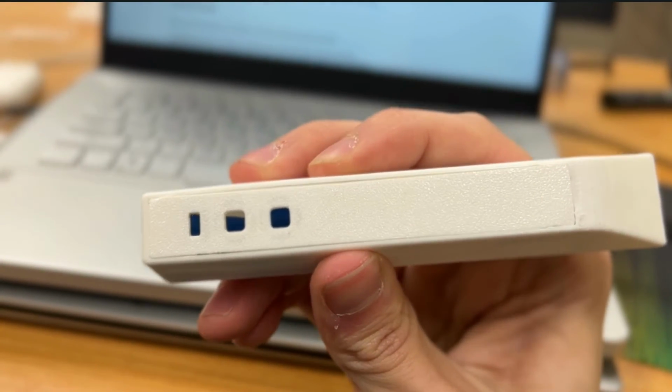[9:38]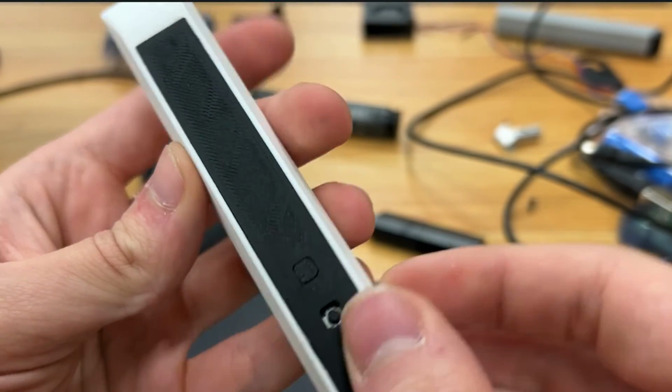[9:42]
Other than wire management, another thing that makes design for assembly tough here is that the walls of the casing converge, making the opening smaller than most of the components inside. So I'm banking on the plastic bending out and having guiding features to slide the parts in without too much fuss. But designing the walls to be bent out comes with the consequence that unless everything fits perfectly inside, they get pushed out and result in gaps with the cover. This is almost antithetical to the fact that the component fit inside needs to be extra tight to avoid any rattling.
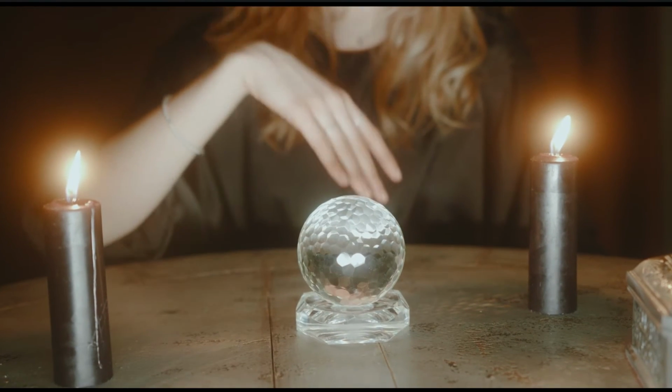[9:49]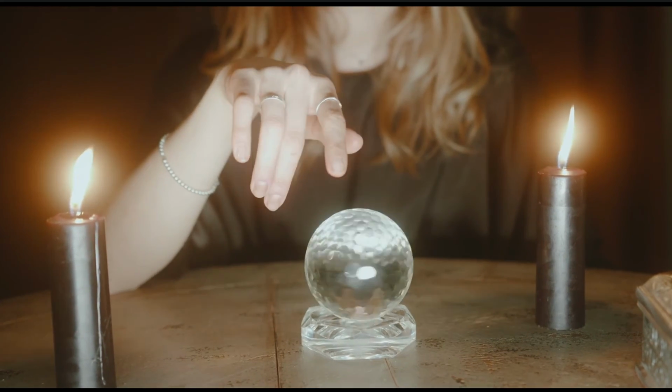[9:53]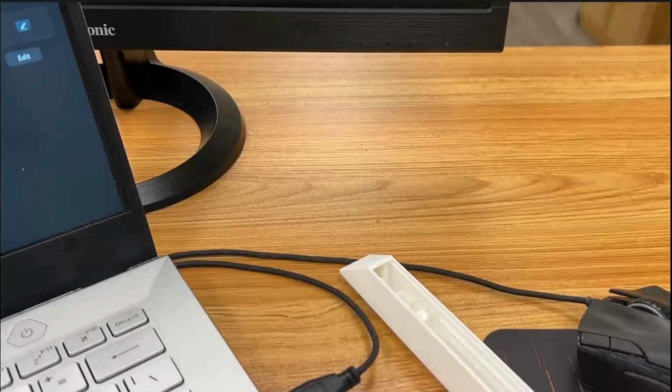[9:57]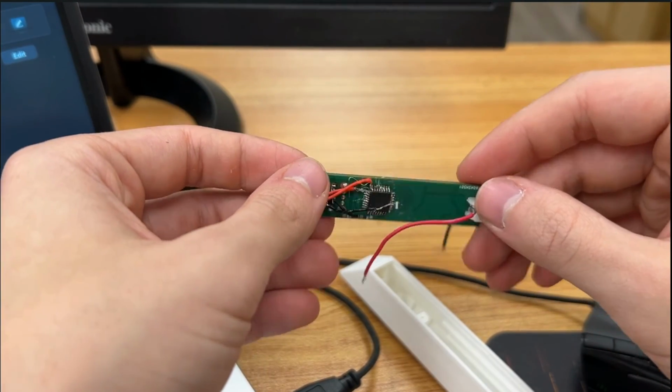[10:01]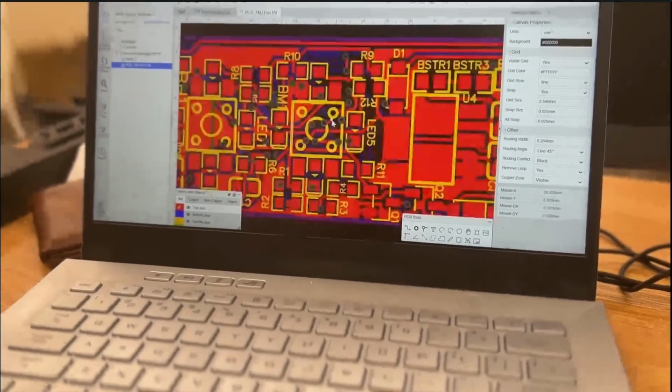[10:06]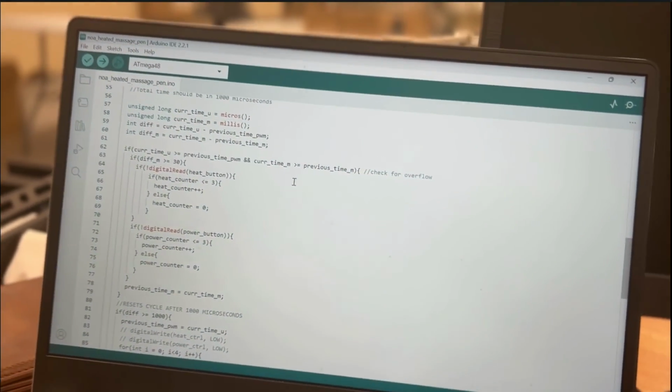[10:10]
You might be wondering, how am I even making all these tweaks without having the PCB designed? Aren't all those electronic components probably going to change everything? Well, I'm not. I'm actually kind of cheating, since at the time of making this video, I had a preliminary version of the circuit board made. So, next episode will be all about catching up in the electronics department, a bit of programming, and hopefully some design updates on this pesky case.